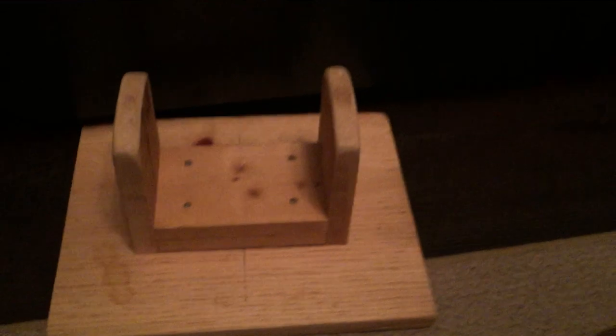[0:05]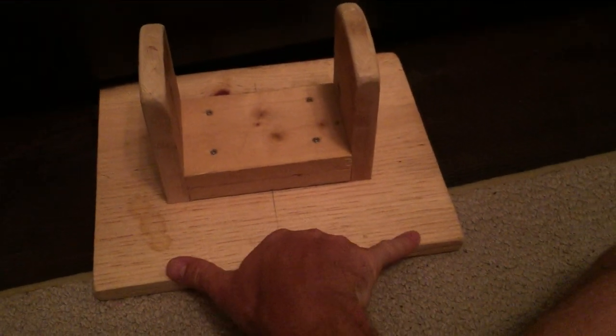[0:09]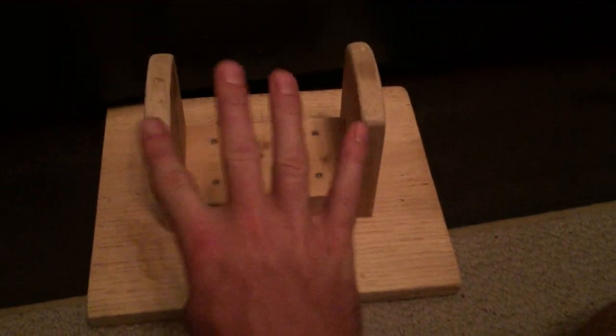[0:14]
Okay, quick recap. This is the Psoas stretcher. So here's the materials you need. You need one 1x10 cut to 12 inches. That's the base. These are 1x4s. You need four of them. You need to cut them at 5.5 inches.
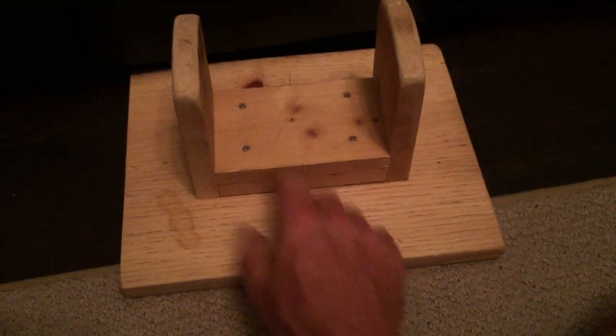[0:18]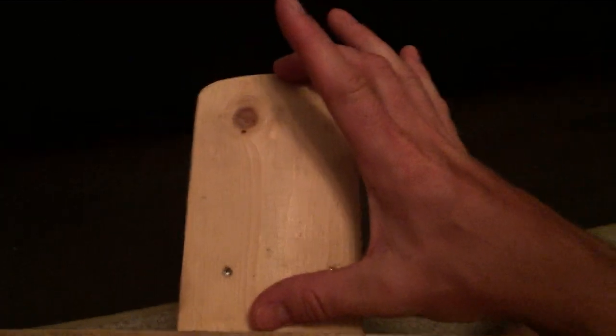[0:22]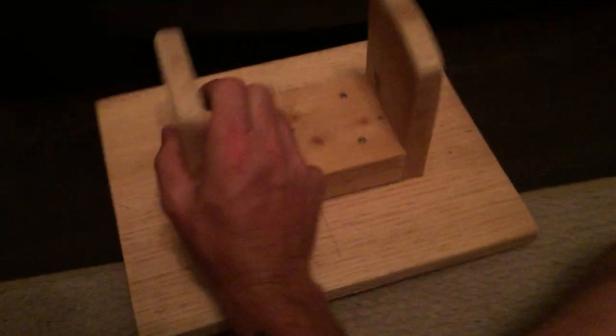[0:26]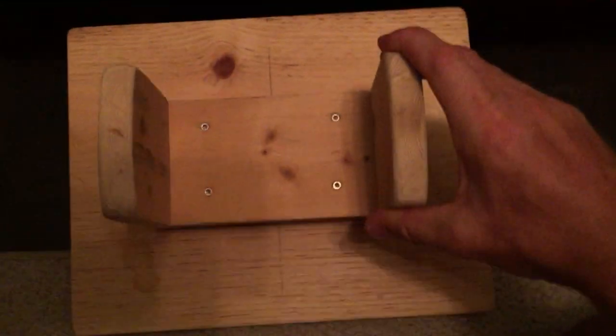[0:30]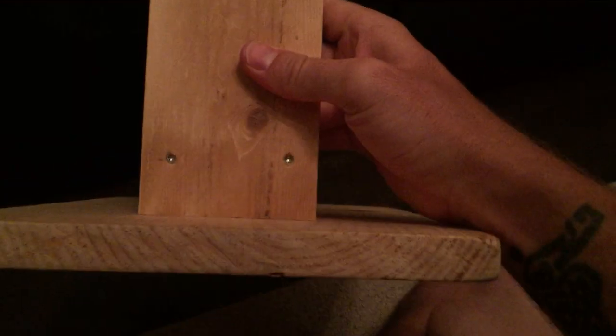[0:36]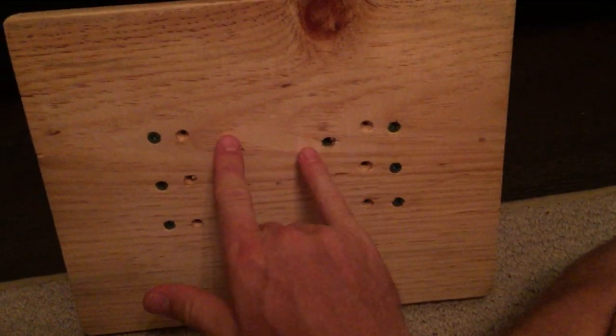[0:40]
That's 5.5. That's 5.5. And this on the side is 5.5 inches at the peak. And then you sand it down like so. Stack them up. Screw them in the top. Screw them in the sides. Like that. And then screw them in the bottom. Make sure you drill pilot holes first.
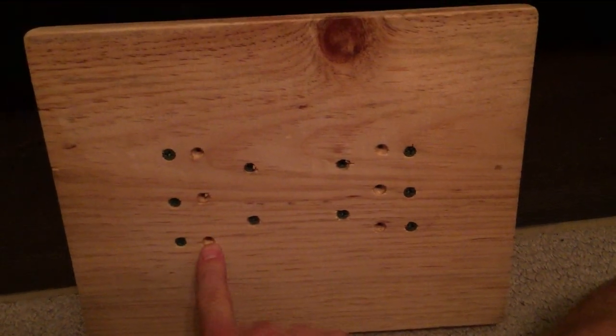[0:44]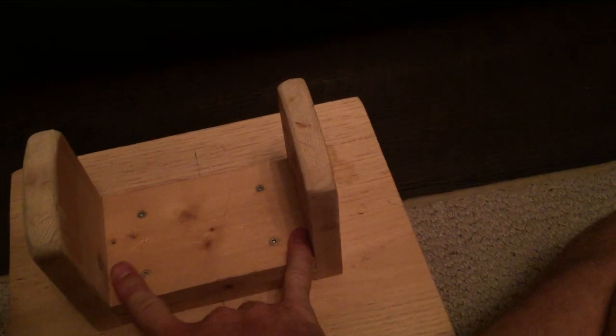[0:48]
This was my first attempt. It was too narrow. Make sure you get the right width. If you measure this at 5.5, it should be about the right width. Your body may be different. If it is, then adjust according to where your psoas muscles are.
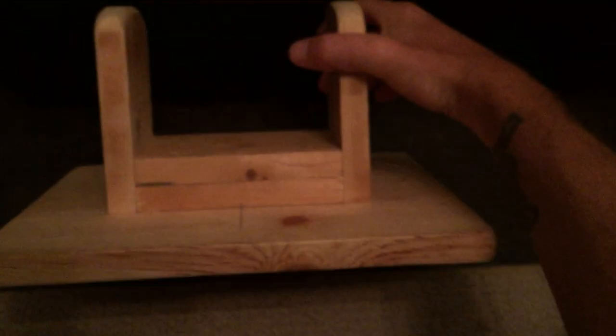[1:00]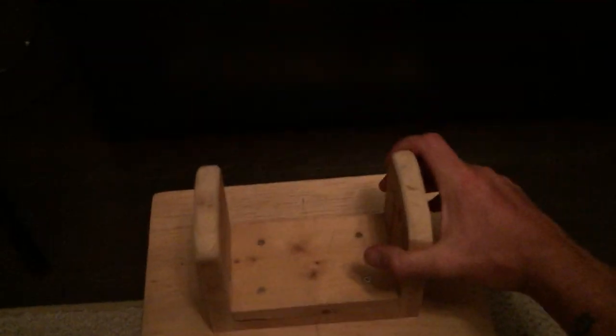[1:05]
And then that's it. You should have a psoas stretching tool for way less than $80.